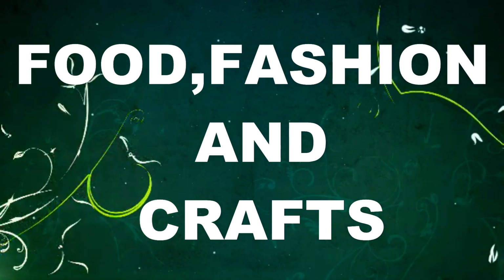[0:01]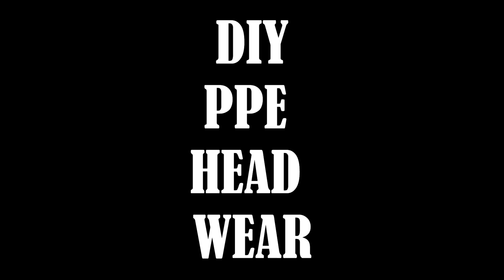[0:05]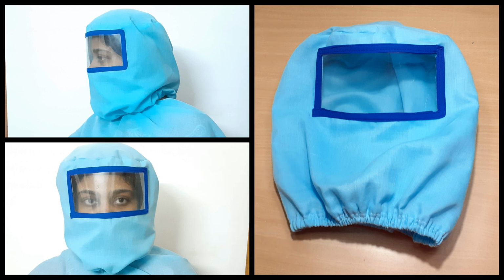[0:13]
In today's video, you will be watching a handmade PPE headwear for those who are not comfortable wearing a mask, as it gives more space for breathing. Now let's get on to the video.
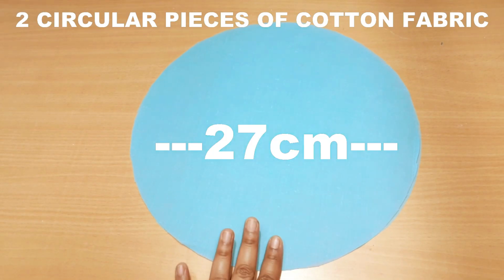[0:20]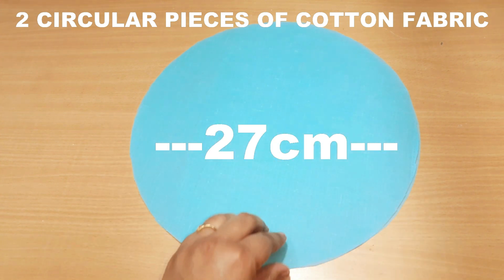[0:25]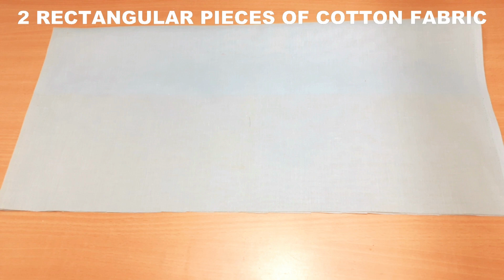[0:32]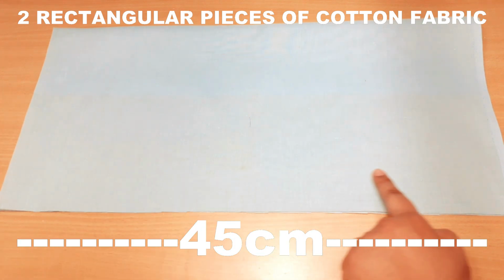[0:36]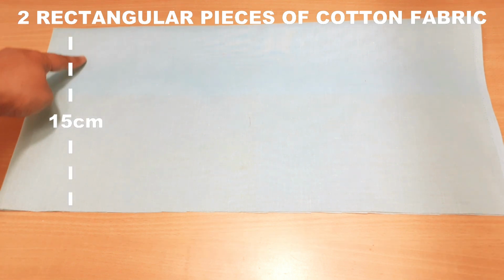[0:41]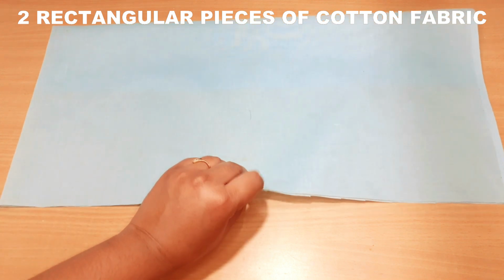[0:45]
Now we'll see what all things we need to make this PPE headwear. So I've taken two circular pieces of cotton fabric which has a diameter of about 27 centimeters. You can use any kind of fabric for this project. Now two rectangular pieces of cotton fabric which is 45 centimeter long and 15 centimeter wide. I've taken two pieces of it.
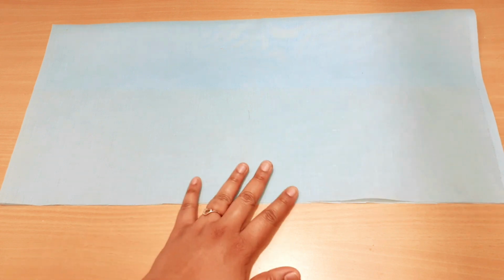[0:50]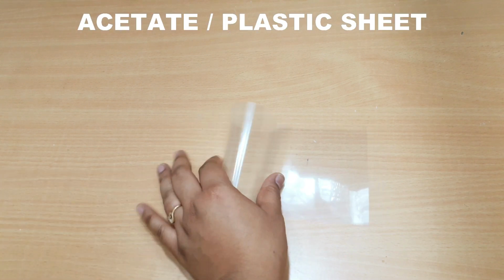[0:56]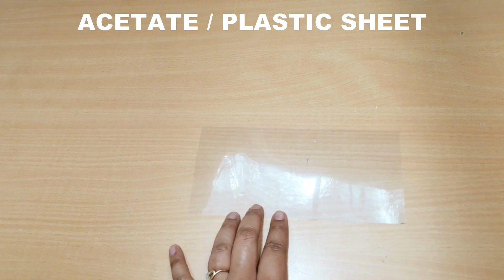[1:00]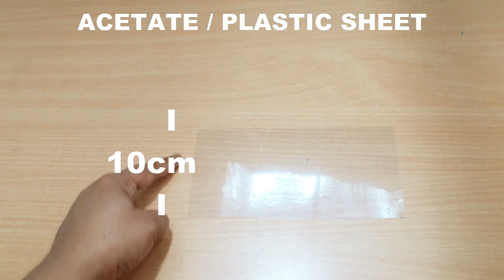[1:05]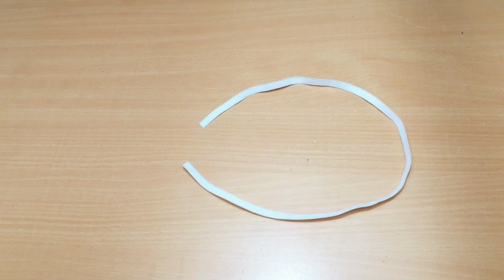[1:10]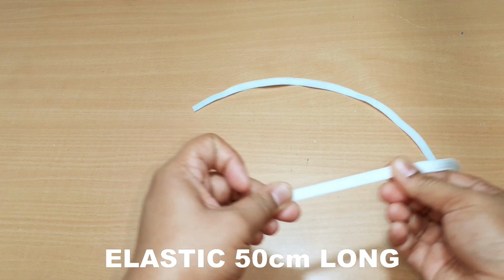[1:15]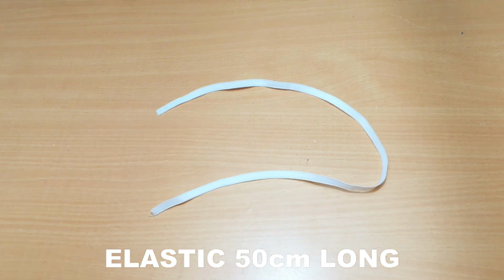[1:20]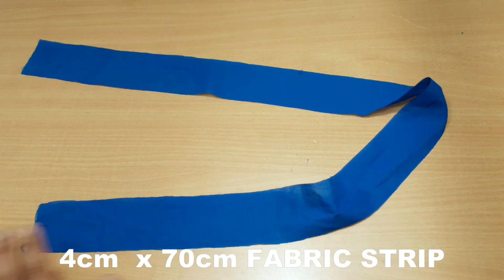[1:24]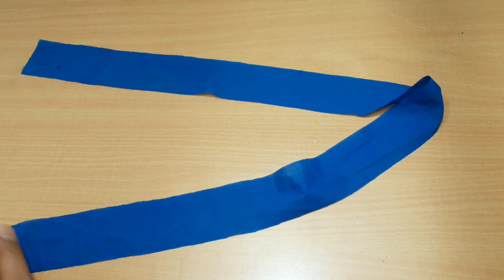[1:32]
Acetate or plastic sheet, you can use any of the thickest plastic that's available. I've taken here 22 centimeter long and 10 centimeter wide. Elastic which is 50 centimeter long. I have taken the elastic that is 1 centimeter wide. Then I have taken a fabric strip which is 4 centimeter wide and 70 centimeter long. We'll be using this fabric strip to make the bias strip.
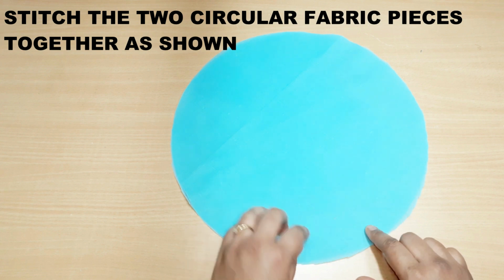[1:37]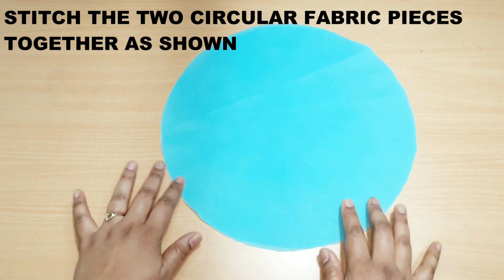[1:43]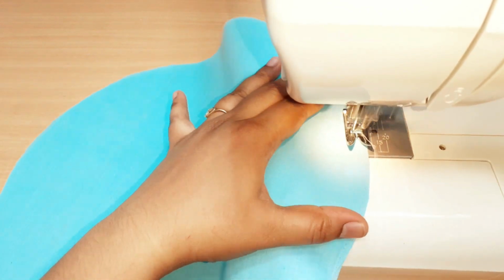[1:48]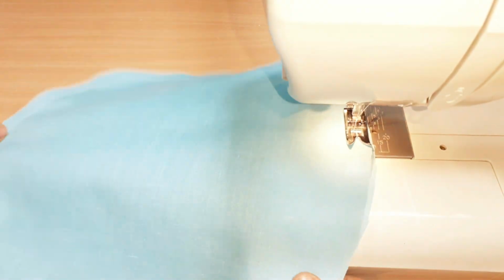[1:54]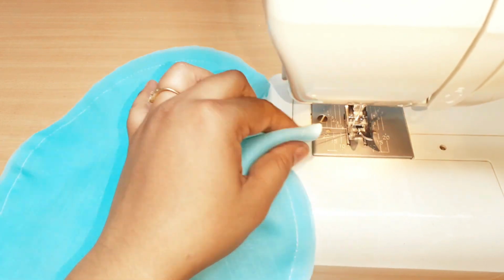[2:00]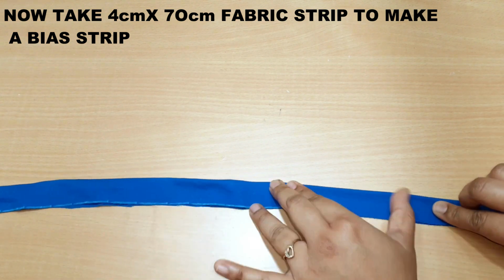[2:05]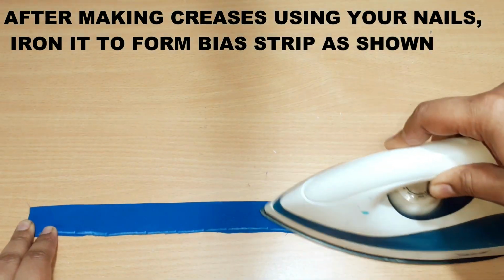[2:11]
Now we'll be stitching the two circular fabric pieces together along the circumference, leaving a seam allowance of about 1 centimeter. Now we'll be making a bias strip using the fabric strip by making creases on the fabric by nails and iron it and press it to make it neat and equal.
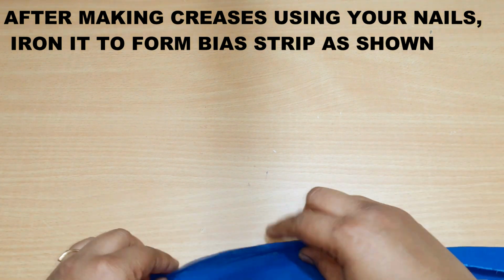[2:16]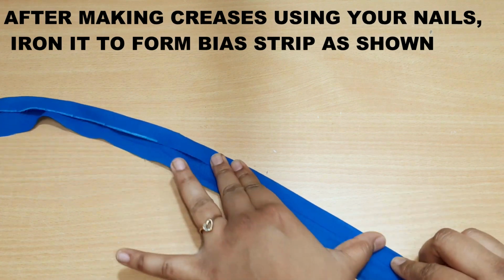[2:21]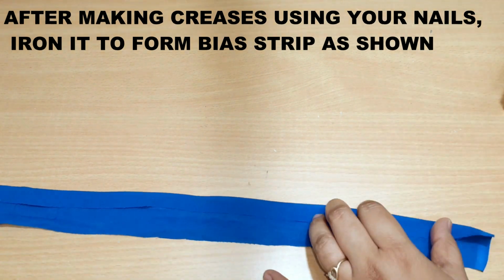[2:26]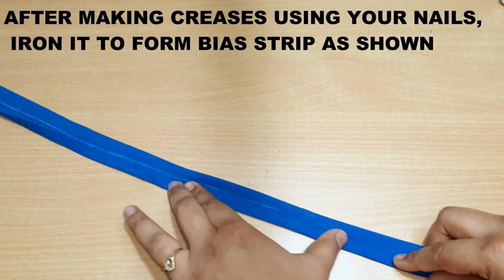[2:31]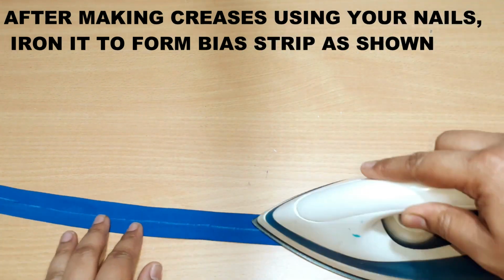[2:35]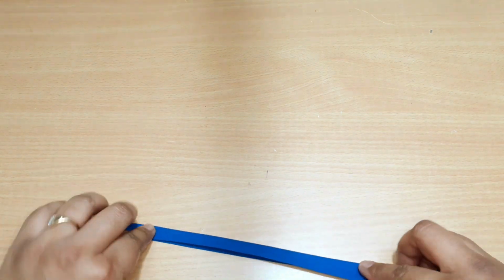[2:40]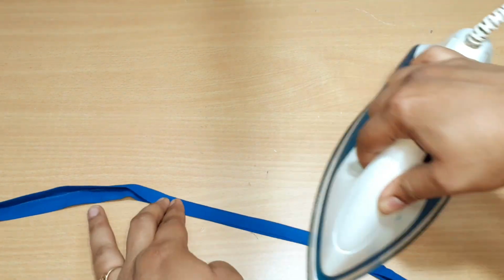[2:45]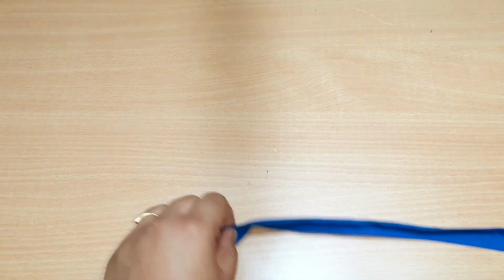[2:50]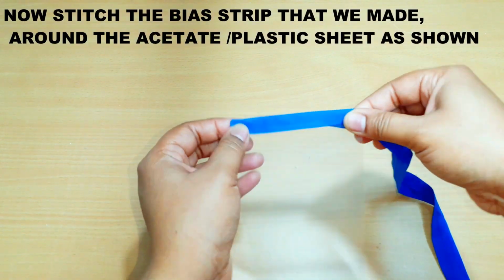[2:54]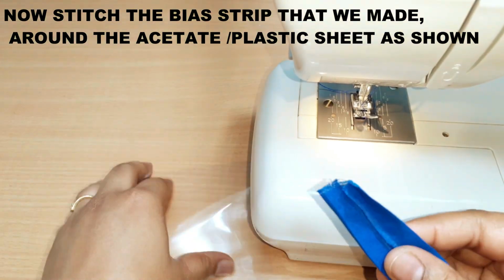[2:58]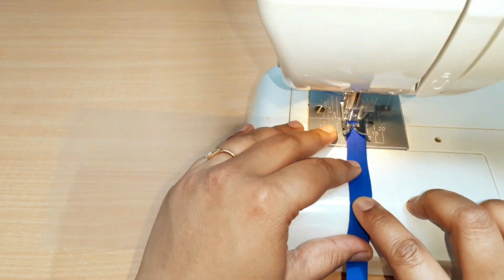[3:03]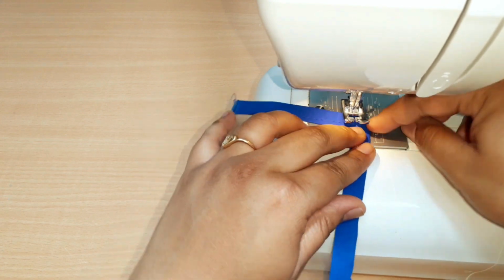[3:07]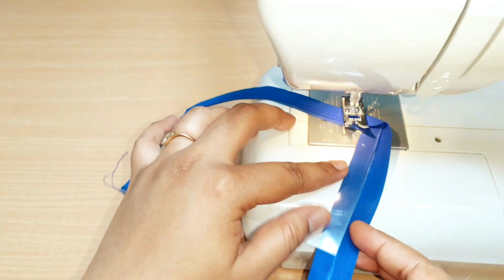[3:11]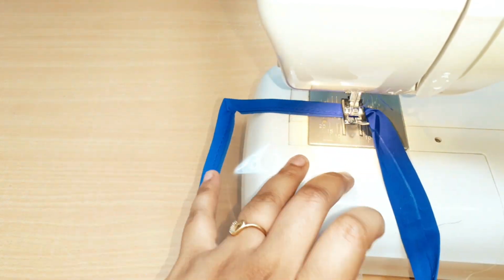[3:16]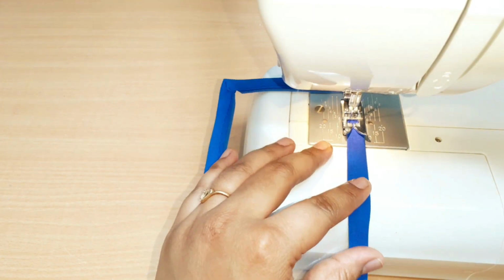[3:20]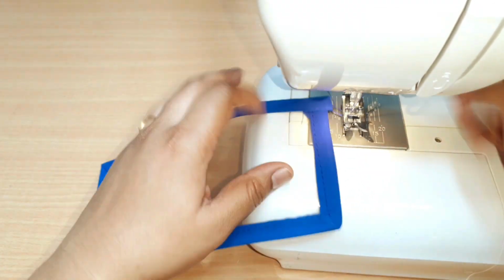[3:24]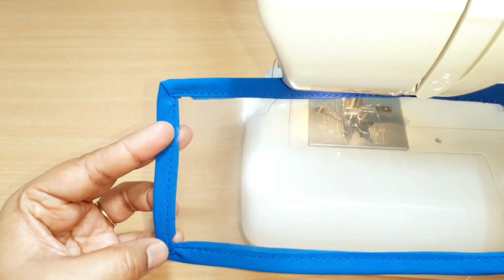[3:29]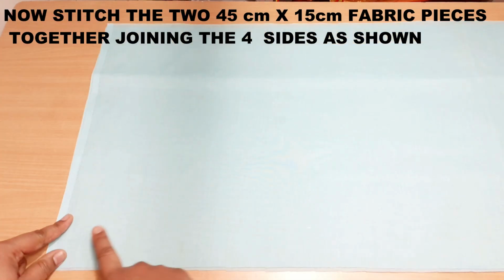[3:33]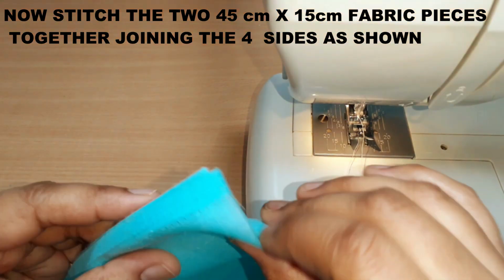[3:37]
Now we'll stitch the bias strip that we made around the acetate or plastic sheet. We'll be stitching it along all the four sides of the acetate sheet. Now we'll stitch the two rectangular pieces together by stitching it around all the four sides of the fabric.
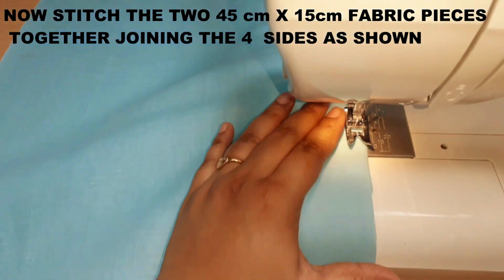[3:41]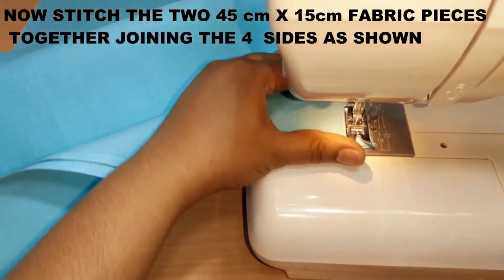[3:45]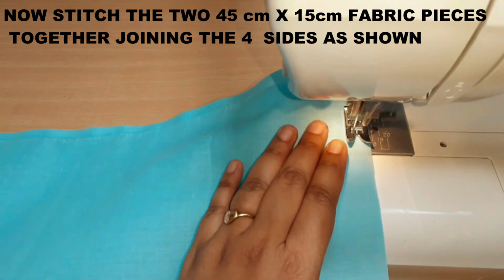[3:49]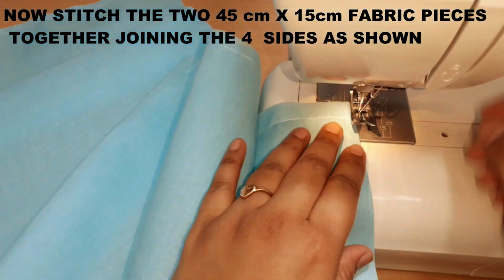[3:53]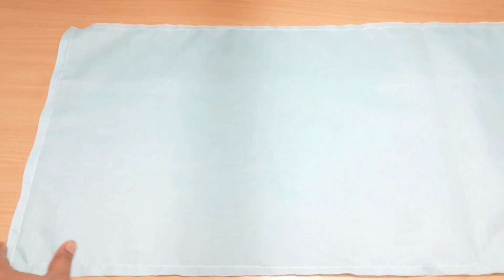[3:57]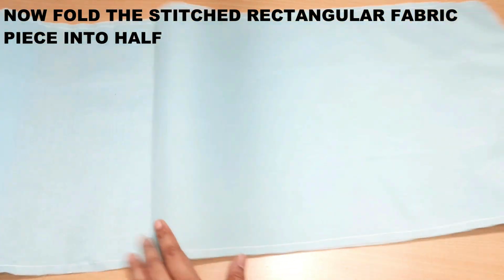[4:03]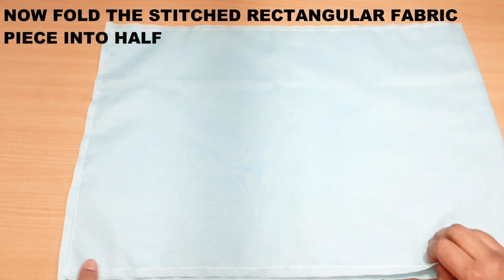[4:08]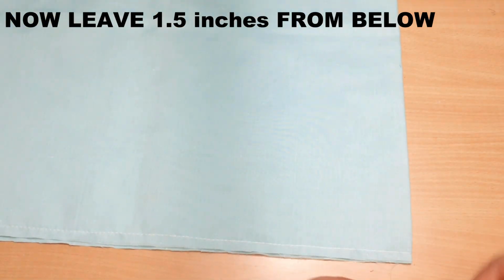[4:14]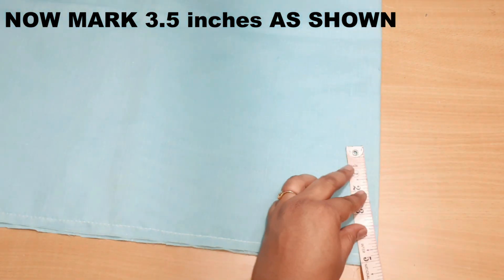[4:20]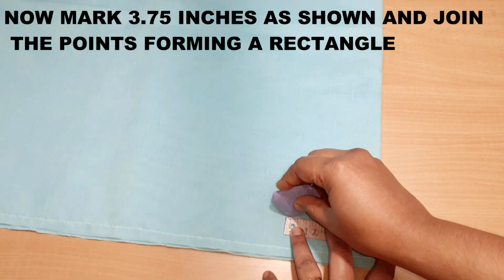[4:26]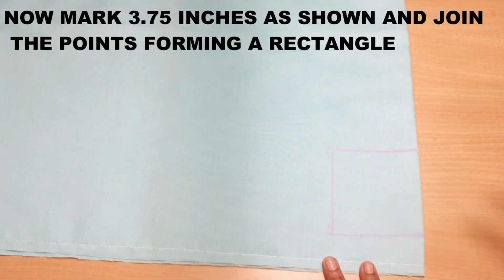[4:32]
Now after stitching the rectangular fabrics together, we are going to fold the fabric into half and place the fabric properly so that we get the midpoint or the center point. And from that point we are going to mark 1.5 inches from below, and from that point we are going to mark 3.5 inches above and about 3.75 inches on the left side, above and below, making a rectangular shape. We'll cut off that rectangular part from the fabric where we'll be attaching our acetate or plastic sheet.
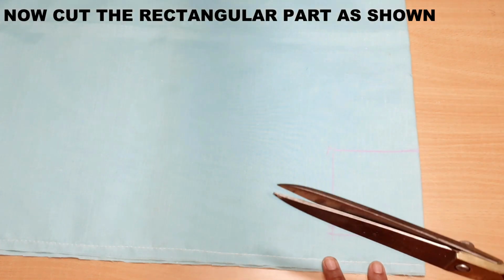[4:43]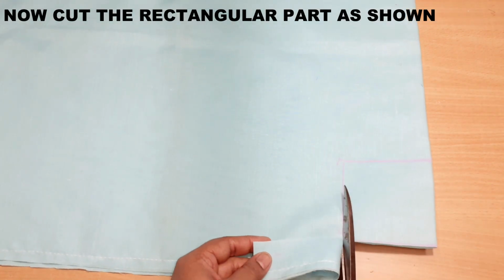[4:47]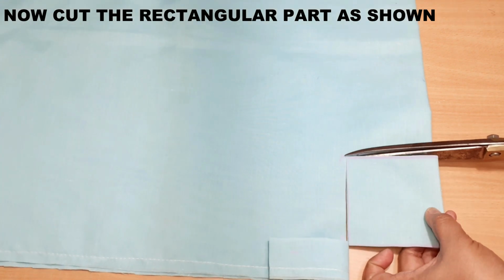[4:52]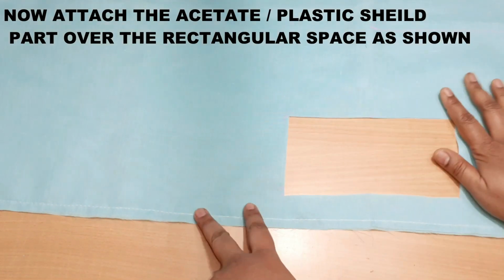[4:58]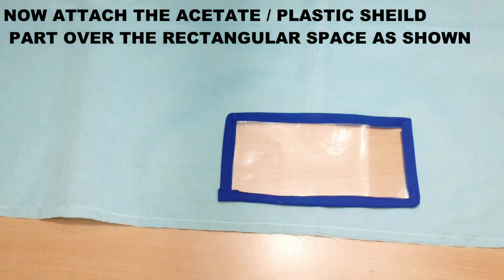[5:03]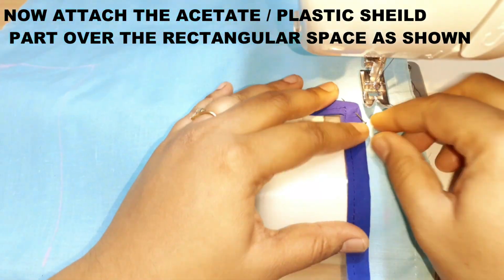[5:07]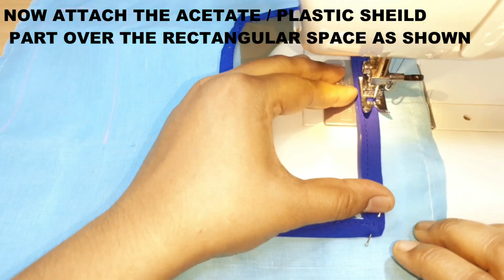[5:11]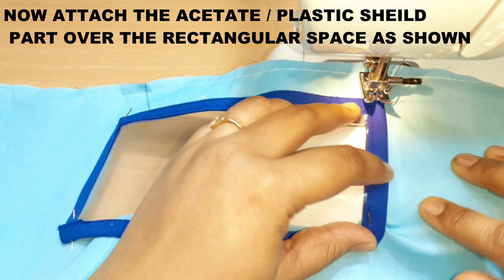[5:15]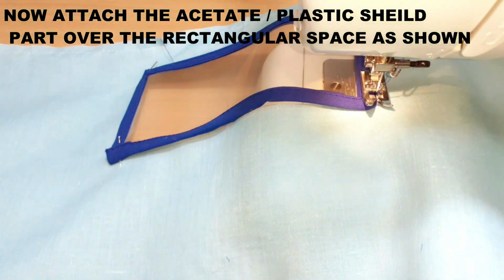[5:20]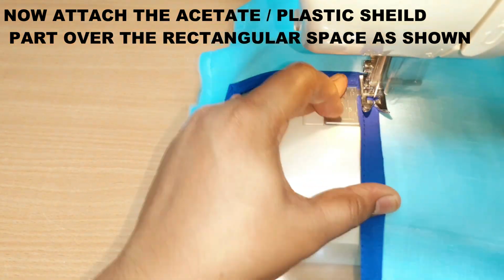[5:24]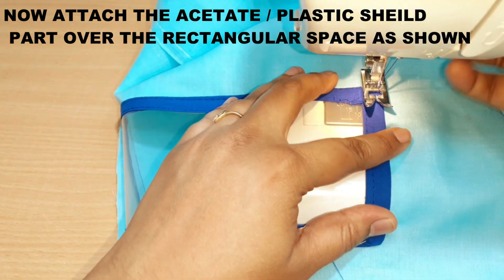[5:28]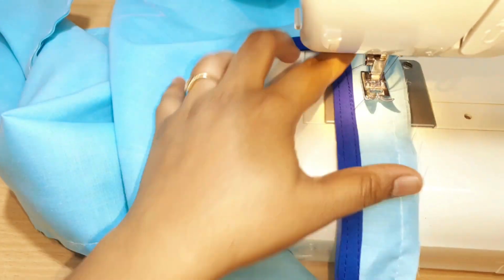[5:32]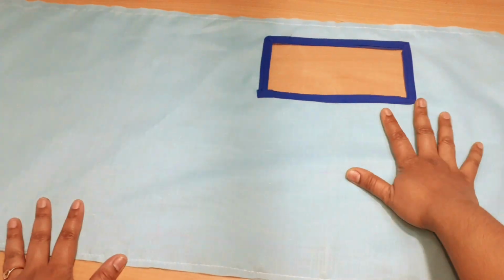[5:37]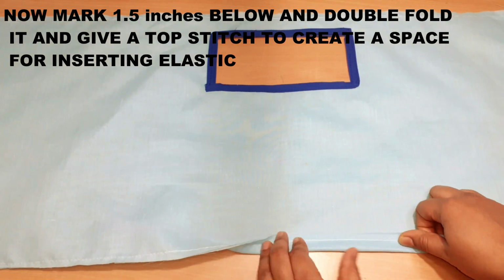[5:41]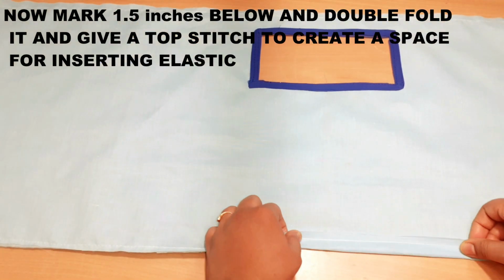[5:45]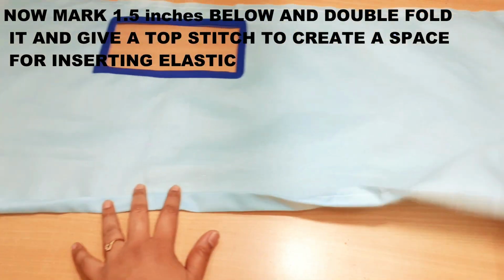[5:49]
Now I've pinned the acetate sheet to the fabric using some pins just to secure the acetate sheet over the fabric. Now we'll start stitching on all the four corners of the acetate sheet. After attaching the acetate sheet over the rectangular piece, now we are going to mark 1.5 inches the lower border below, and we are going to double fold it and give a stitch to create a space where we'll be inserting the elastic strip below.
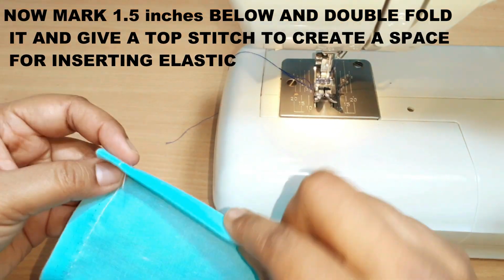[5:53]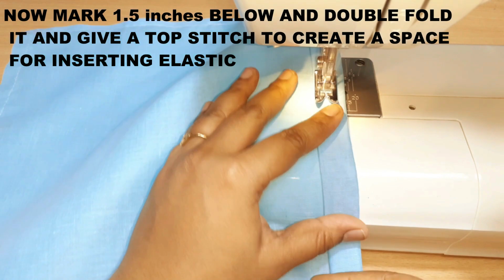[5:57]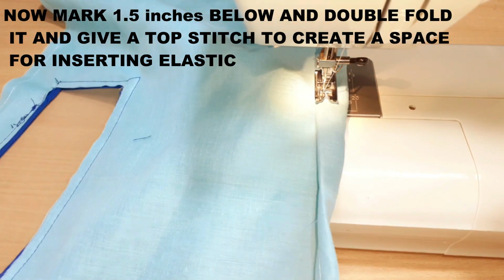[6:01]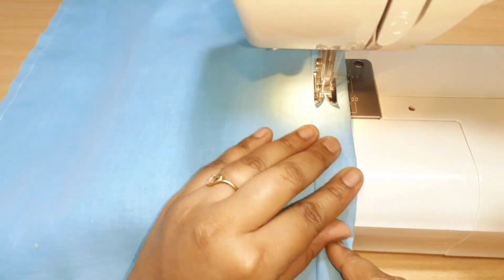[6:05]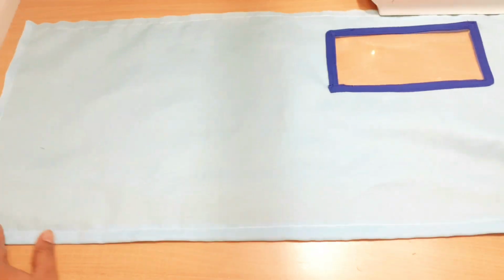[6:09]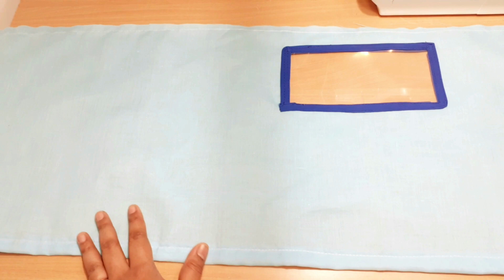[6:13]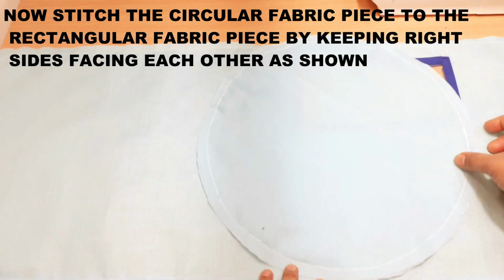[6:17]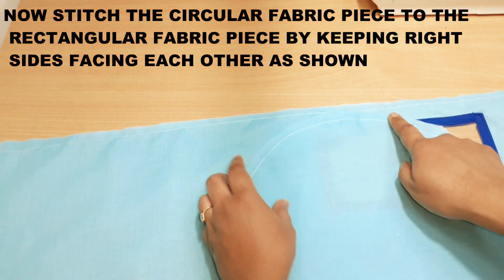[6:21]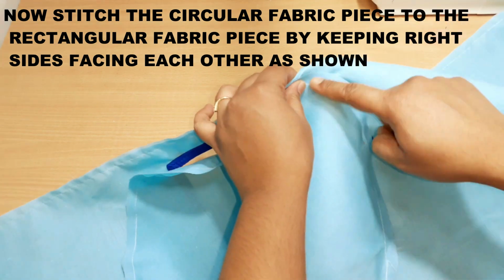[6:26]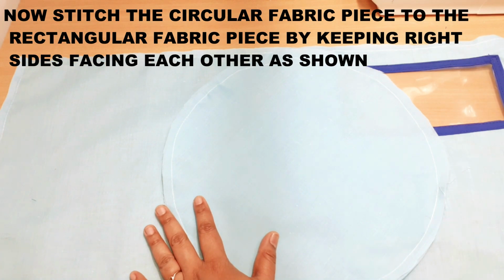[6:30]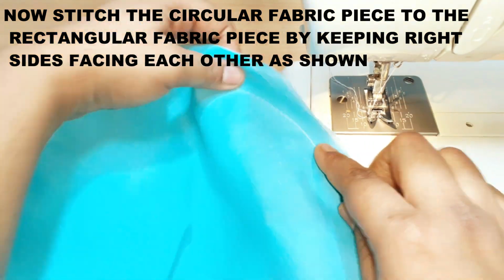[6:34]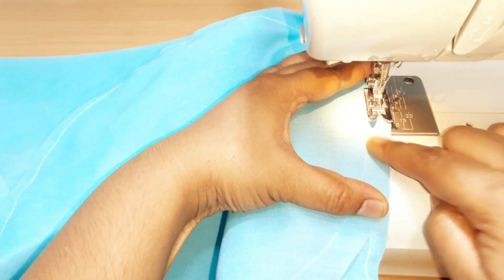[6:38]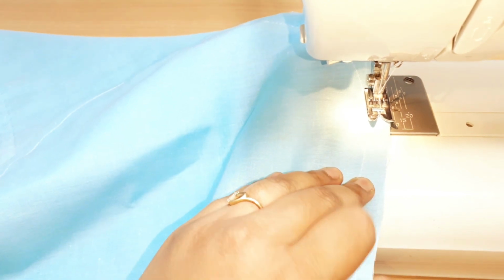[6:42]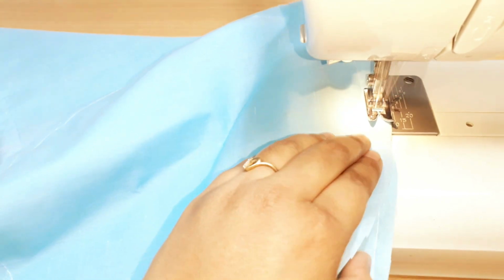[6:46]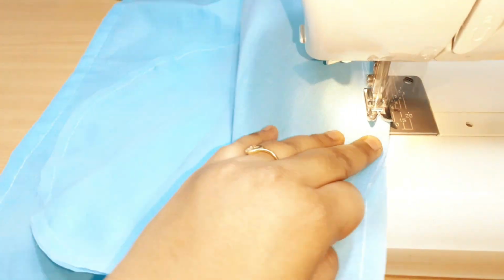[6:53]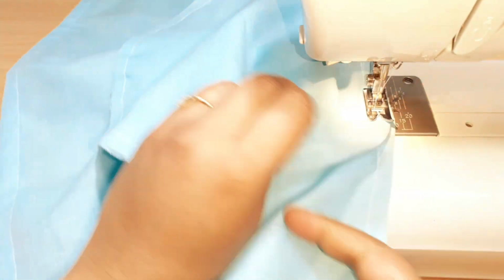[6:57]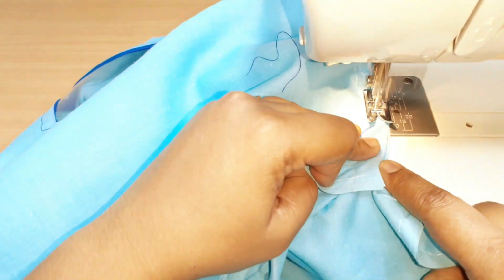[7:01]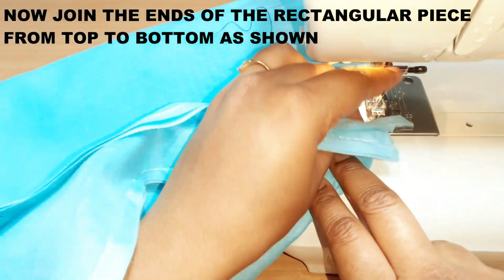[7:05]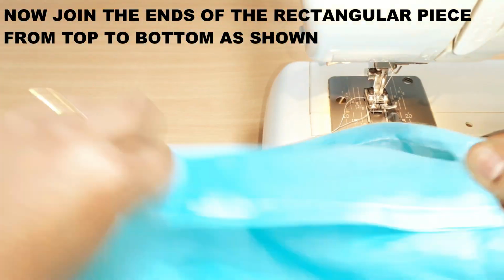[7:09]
Now we'll be attaching the circular piece to the rectangular piece. For that we are going to place the two right sides facing together and we are going to start stitching. Once the whole circular fabric is attached to the rectangular piece, we'll be joining the ends of the rectangular piece from top to the bottom, and we'll cut off the excess fabric.
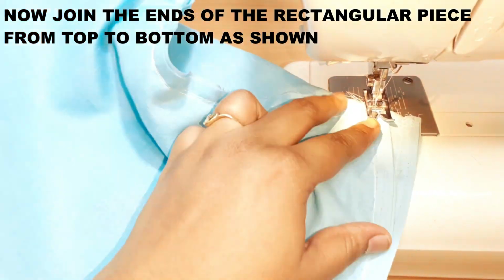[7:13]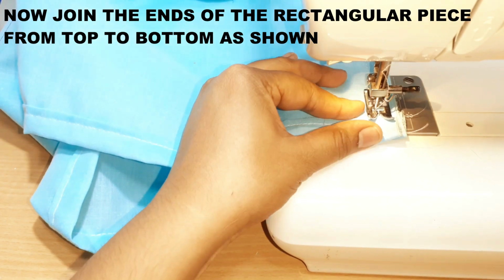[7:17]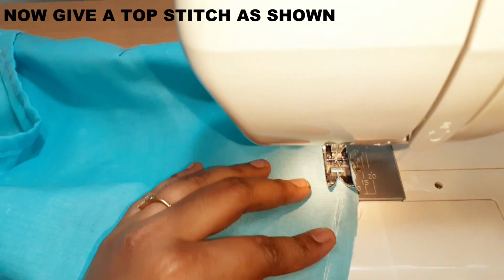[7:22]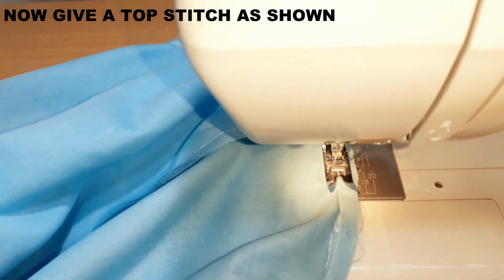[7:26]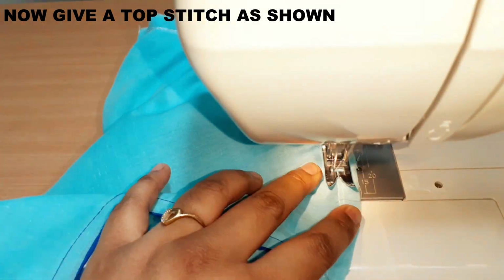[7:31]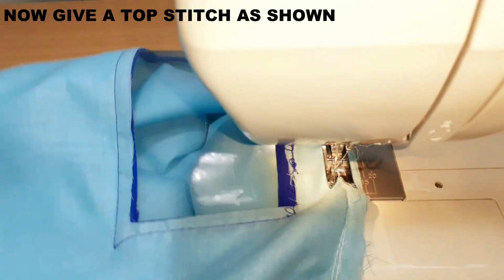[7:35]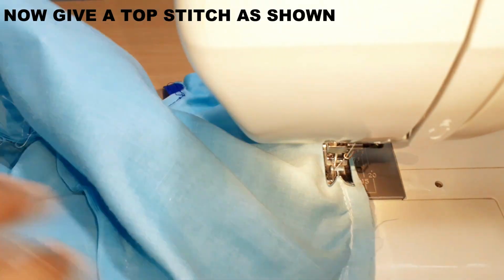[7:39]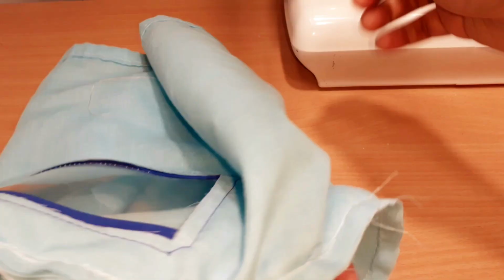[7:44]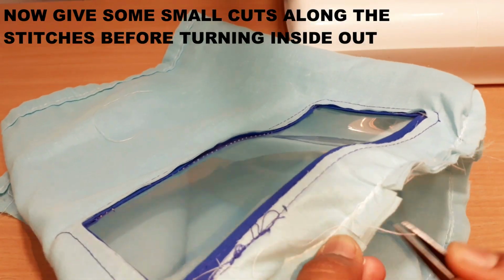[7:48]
Now we'll give a top stitch along the circumference of the circle in the top part. It gives a neater look and secure the fabric as well. Now we'll be giving small cuts along the circular part before turning the fabric inside out.
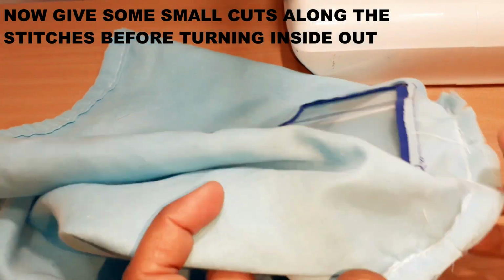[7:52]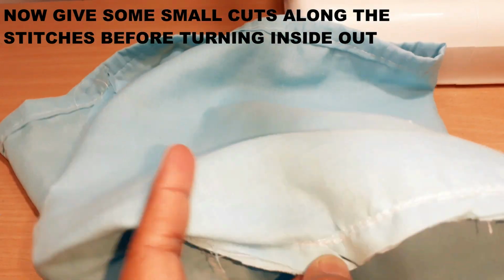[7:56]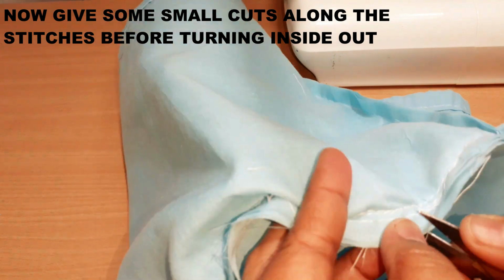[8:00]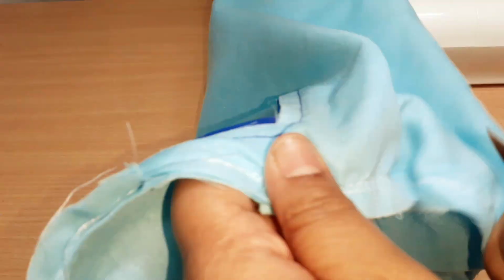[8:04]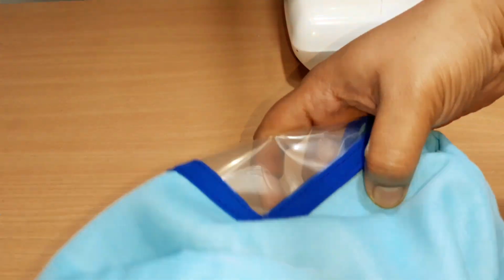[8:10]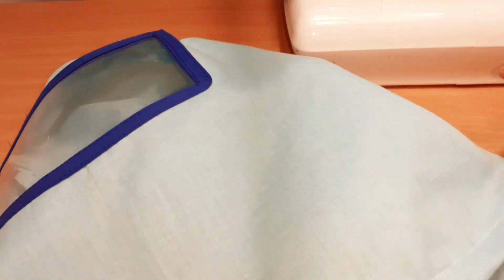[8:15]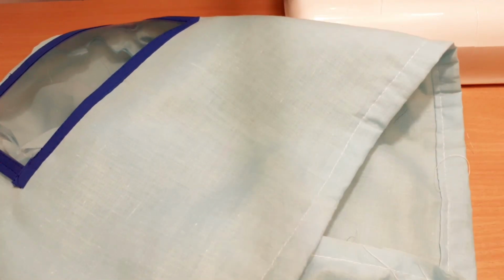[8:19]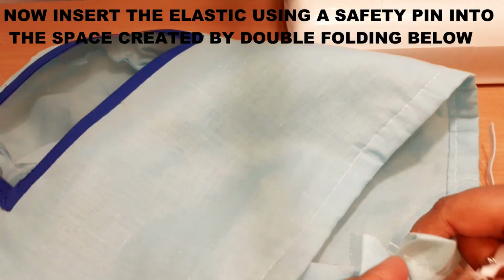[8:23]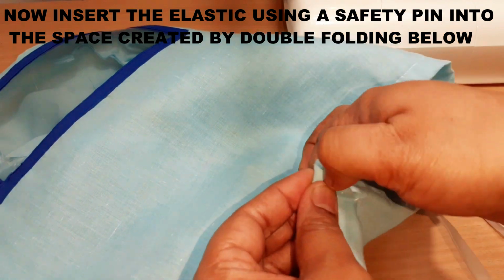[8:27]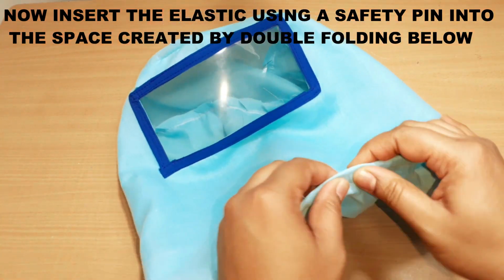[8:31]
Now we'll turn the fabric inside out and we are going to insert the elastic strip into the cavity that we created by double folding. So I'm going to attach the elastic using a safety pin into the cavity or the loop, and we are going to insert it around the whole circular area.
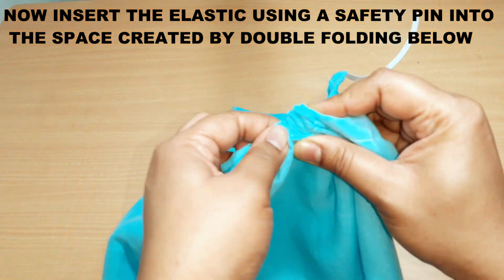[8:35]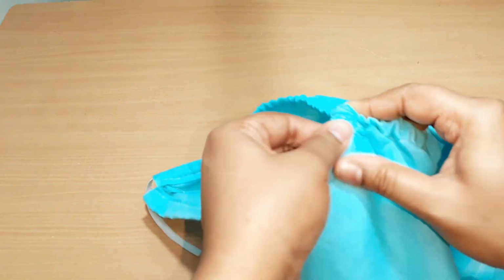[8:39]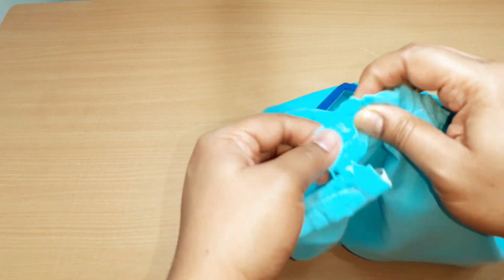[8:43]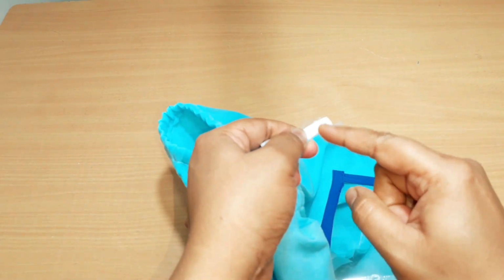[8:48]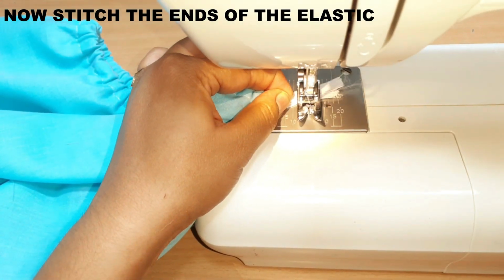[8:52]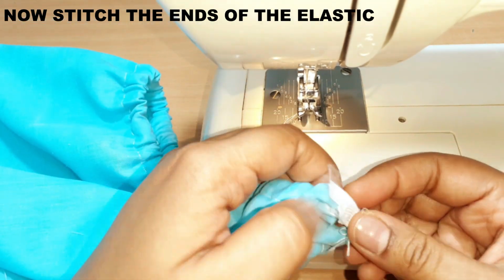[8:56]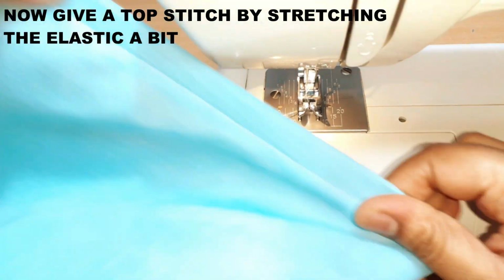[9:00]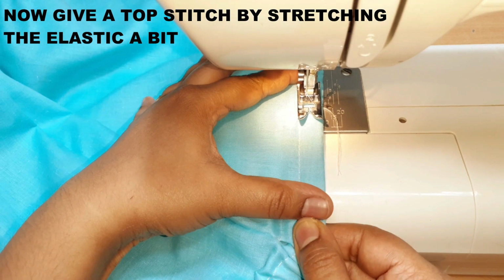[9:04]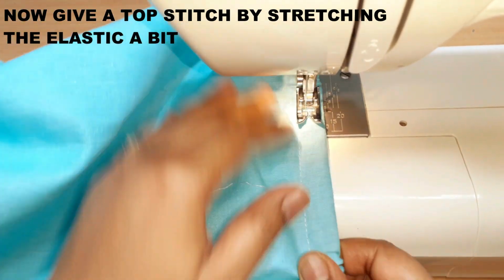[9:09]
Now we'll be joining the ends of the elastic together by giving it multiple stitches to make it secure, and we are going to insert the ends into the fabric, and we are going to give a top stitch by stretching the elastic a bit so that it gives a much more neater look and secures the elastic into the fabric as well.
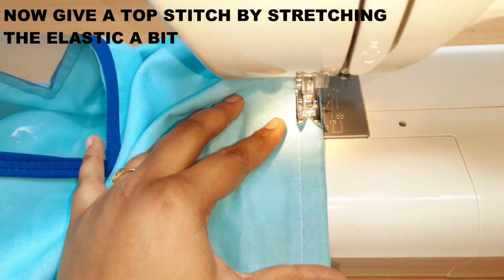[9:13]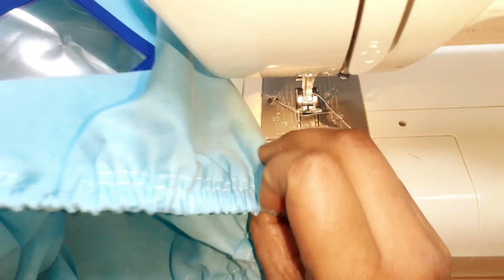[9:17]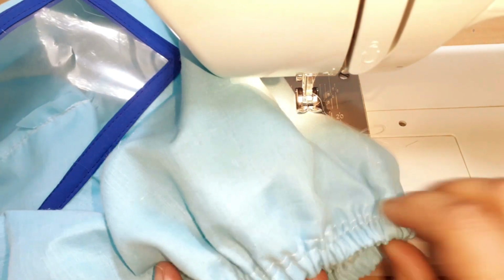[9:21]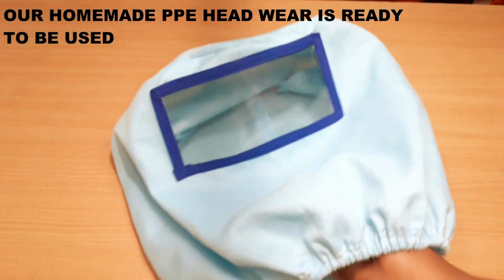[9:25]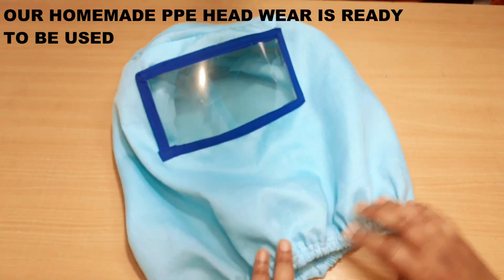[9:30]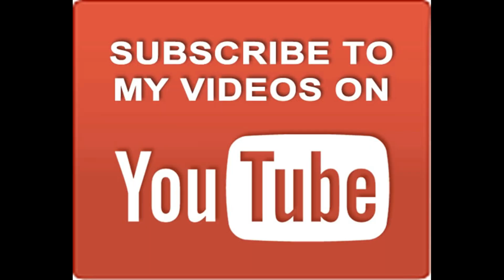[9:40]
So our homemade PPE headwear is ready to be used. This is much more comfortable than the mask because it gives more space for breathing, and you may use it outside or even inside when you are with a person who is under home quarantine. Then this will help you a lot. I have used cotton fabric here. You may use any kind of fabric or add more layers just to give extra protection.